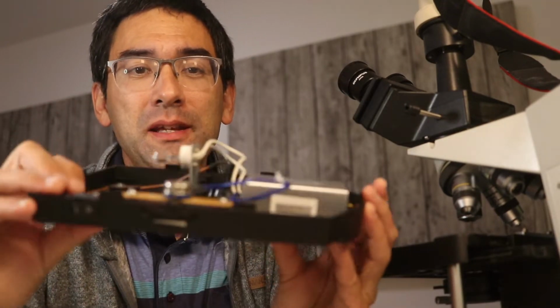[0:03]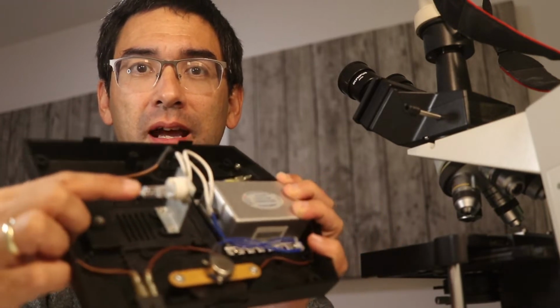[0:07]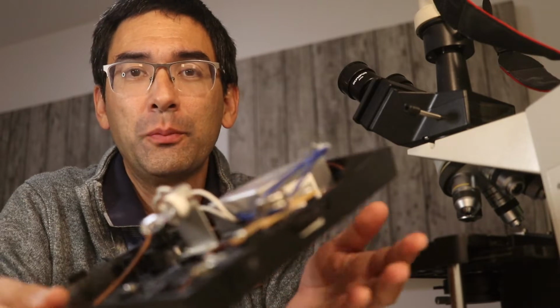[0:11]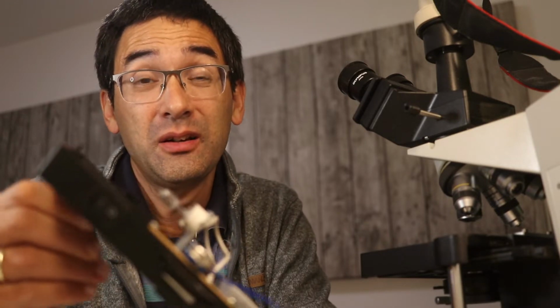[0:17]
This here is the base of a microscope. It contains all of the electronics, and you can also see the halogen lamp here. I detached it from the microscope because it didn't work anymore. We've got a whole bunch of microscopes in school, and we originally thought that the transformers were all broken. It didn't turn out to be like that. In this case at least, it was just the lamp which didn't work.
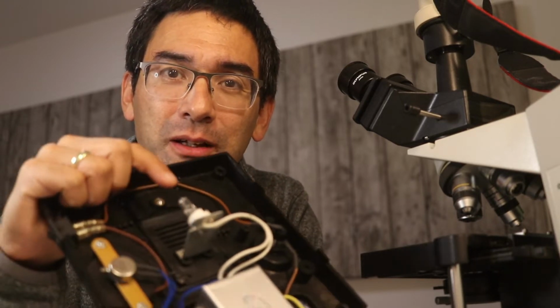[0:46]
But it took me a little bit of time to actually figure this out, and I'm going to show you what I've done, because I originally intended to take out all of the electronics and convert everything to LEDs. That is not necessary anymore, but I'm still going to show you how it's possible to connect an LED lamp here instead of a halogen bulb.
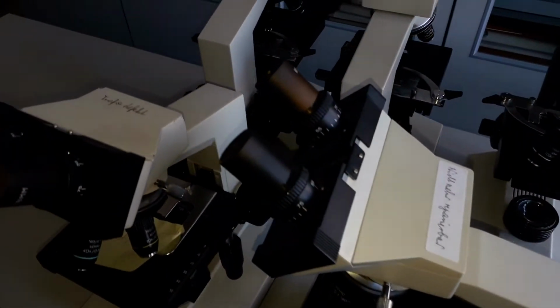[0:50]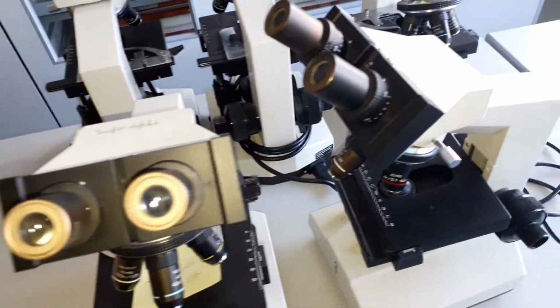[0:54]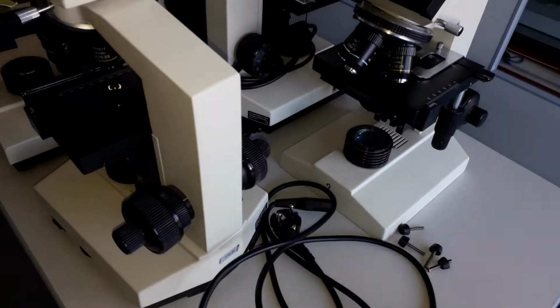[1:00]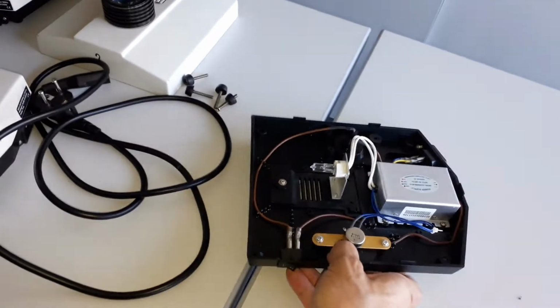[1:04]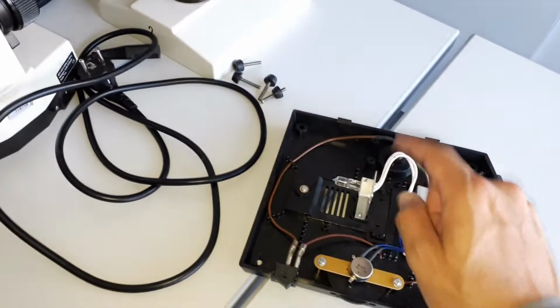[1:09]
So these are the microscopes that need repair, and all of them do not work anymore, in the sense that the electronics doesn't work, so there is no light. I decided to take one of them apart. I unmounted the base, which you have already seen, and this is the part that I took home for further analysis. And at home, I had a close look.
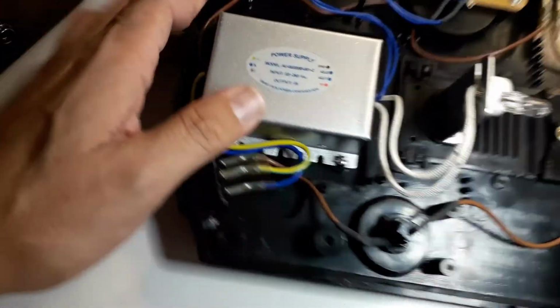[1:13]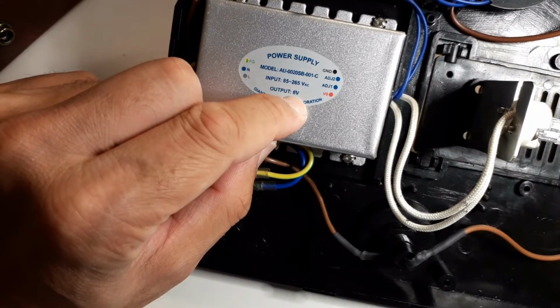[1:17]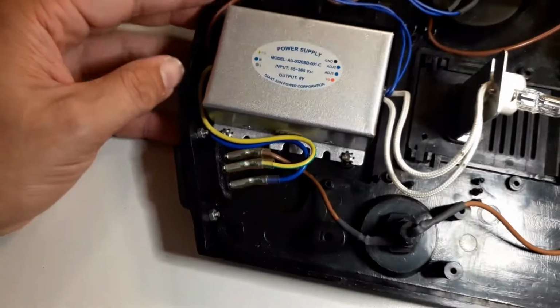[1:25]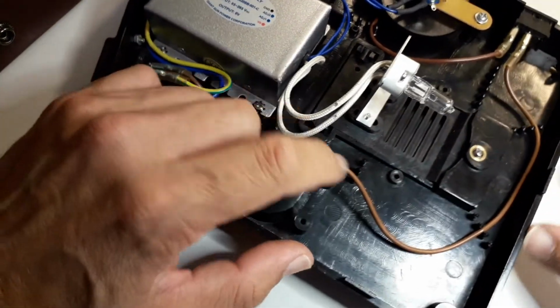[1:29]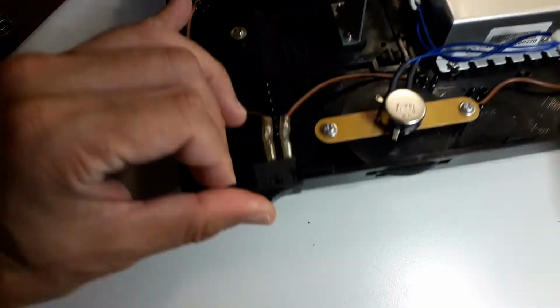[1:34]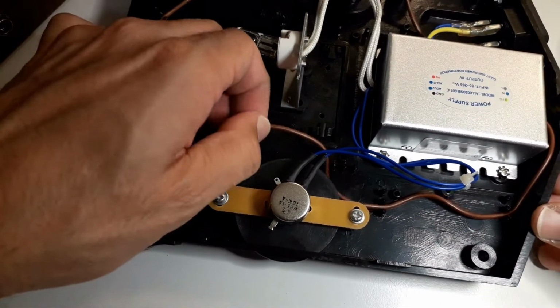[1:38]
The silver box that you see here is the transformer, and it produces 6 volts out of the power supply. These 6 volts are then used to power the halogen lamp. But what are the different parts? First of all, this is the power supply cable, which goes to a switch. And then here is the main switch, of course. Then the power goes into the transformer.
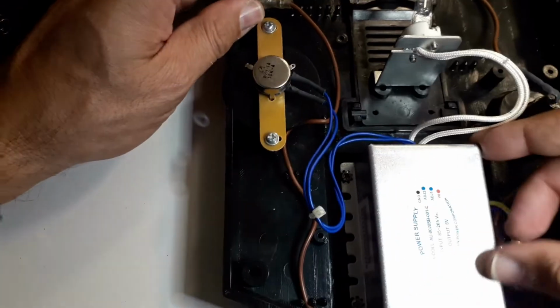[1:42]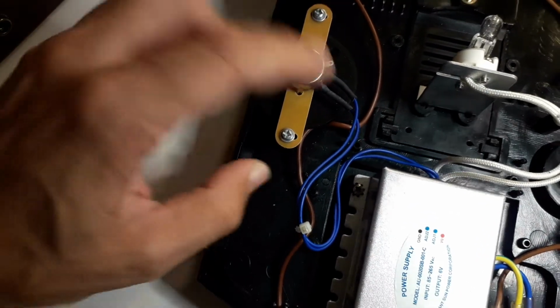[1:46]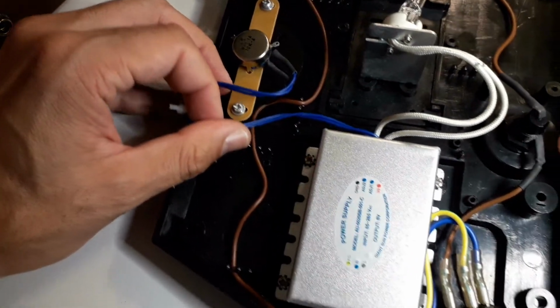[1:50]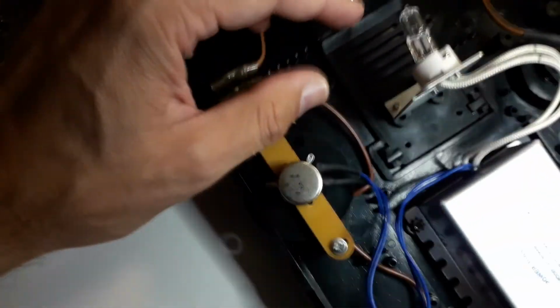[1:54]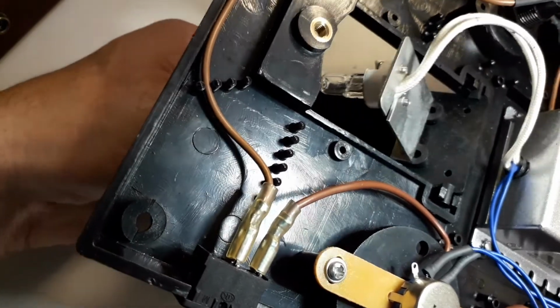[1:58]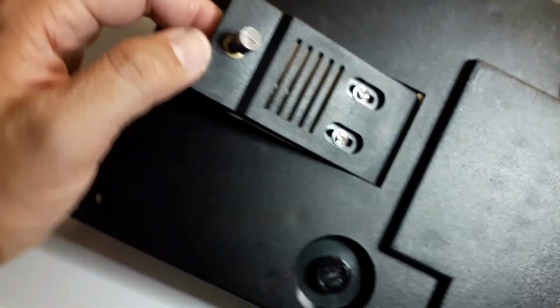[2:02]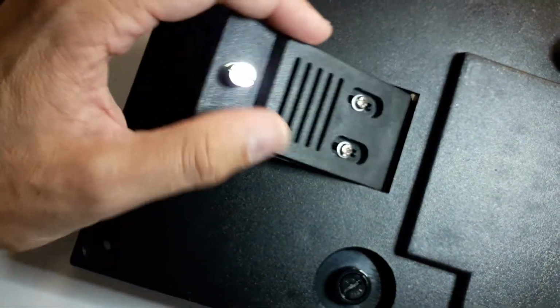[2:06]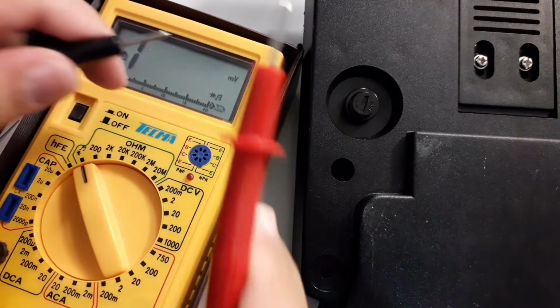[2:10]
The blue cables that you see here on the left side are connected to a variable resistor, and they control the power supply to change the voltage of the power out, which is connected to the halogen lamp. And this is how you're supposed to exchange the light bulb. You do not have to open everything completely, but there's a little door on the bottom of the microscope that can be opened to directly access the halogen lamp.
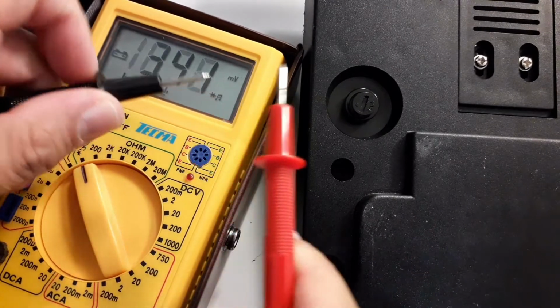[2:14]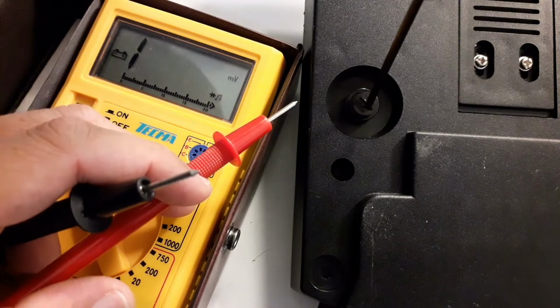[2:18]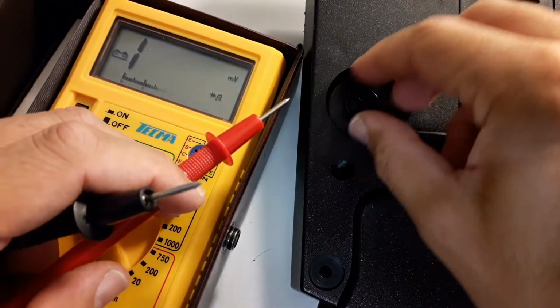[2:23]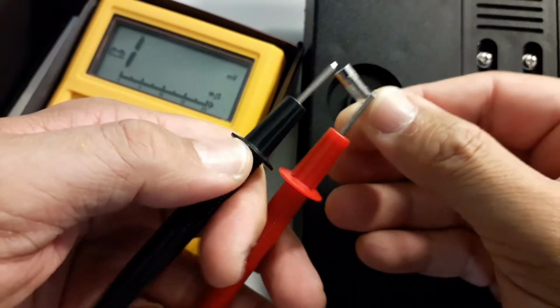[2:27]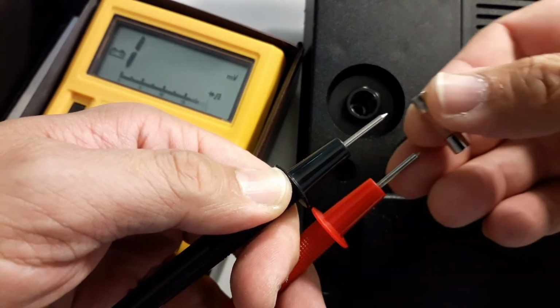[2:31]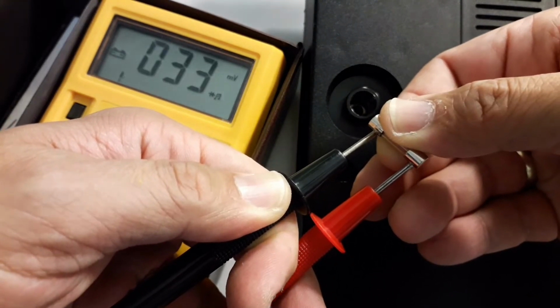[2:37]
Okay, so I'm now checking whether the fuse is still intact, so I'm removing the fuse here, because sometimes things don't work because the fuse is broken. If you hear the beeping sound, this means that there is a good connection, and of course there is a beeping sound, so the fuse is actually not broken, and the fuse is therefore not the reason why the microscope didn't work.
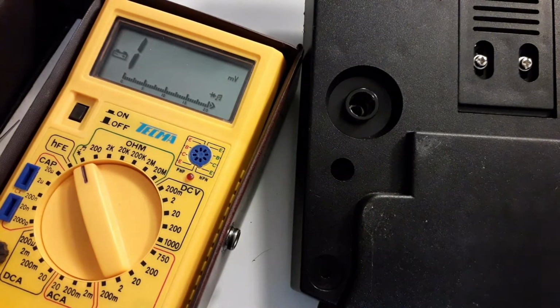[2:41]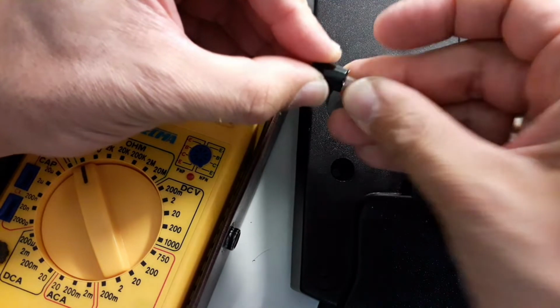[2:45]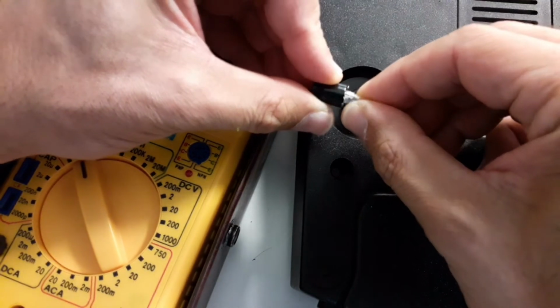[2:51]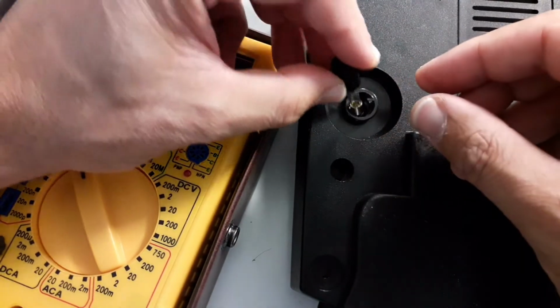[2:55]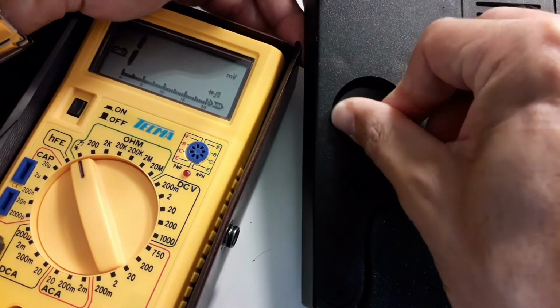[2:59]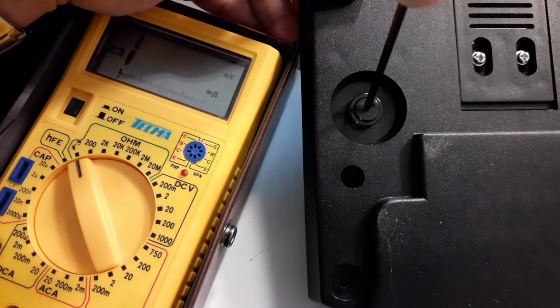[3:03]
And when inserting the fuse again, you have to make sure that you do not insert it too deeply. That is way too deep, don't do that, otherwise there is no proper connection. So only insert it a little bit, put it back, and then this way you can make sure that there is a good connection here. So that means that the fuse is not at fault.
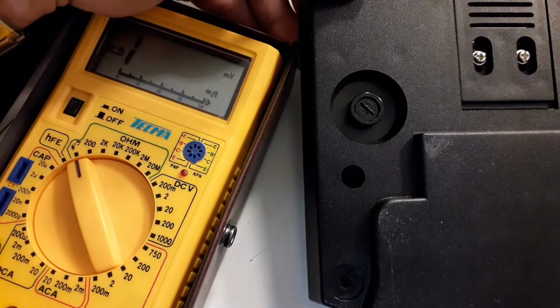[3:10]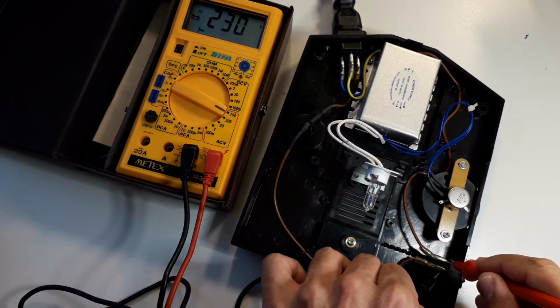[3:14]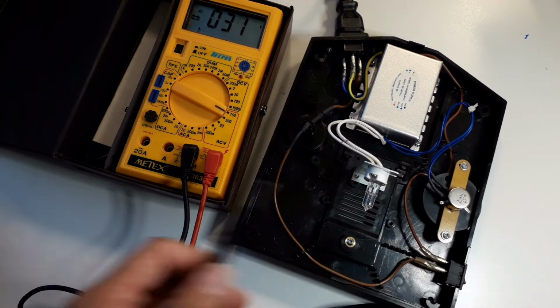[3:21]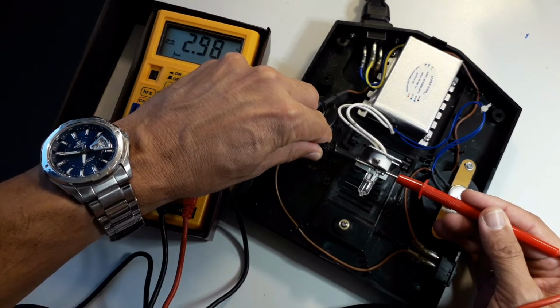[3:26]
We can try to continue to look for the problem. I've already told you that it's actually the lamp that is broken, but the lamp itself looked quite okay. So I'm simply checking whether there is main power, 230 volts alternating current. That is not a problem. You don't want to do that normally, because otherwise you can electrocute yourself. And the transformer produces, at this setting, at least 3 volts. If you turn it up a little bit, then of course you get the 6 volts. But the power is actually reaching the lamp, and this should have already been a first indicator that the lamp has a problem.
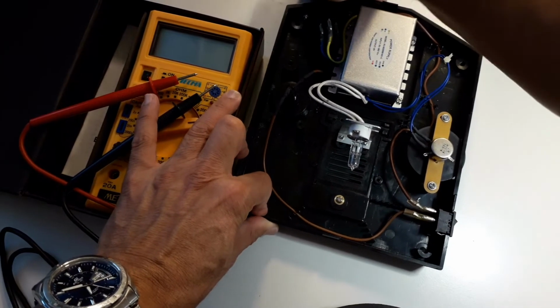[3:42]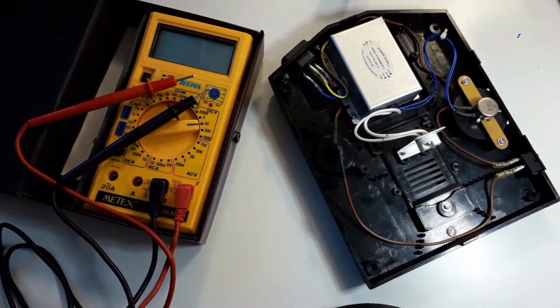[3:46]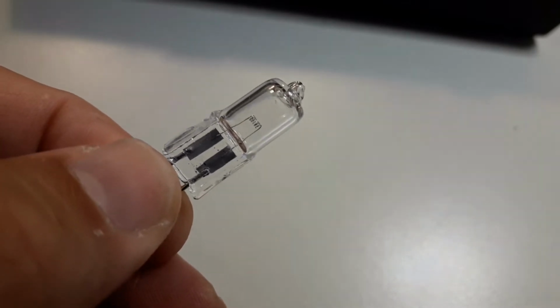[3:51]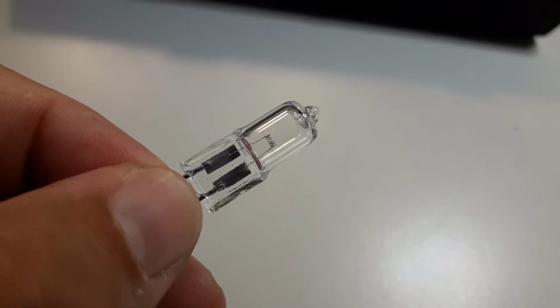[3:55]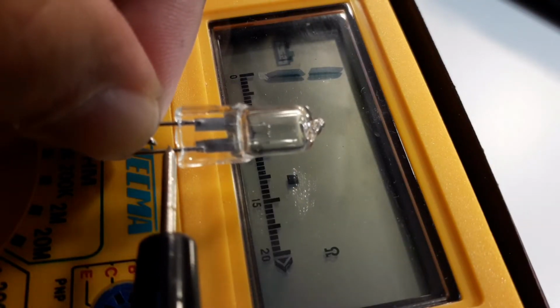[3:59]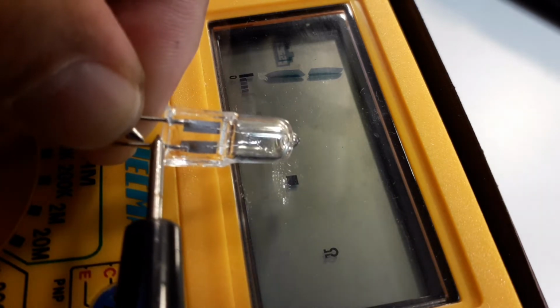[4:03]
What I've done next is I've simply taken the lamp out, and it looked okay. There is no black deposit anywhere. It did not look broken at all. So evidently there is a problem somewhere. But when I measured it, I was able to see that there is no connection here. So it's indeed broken.
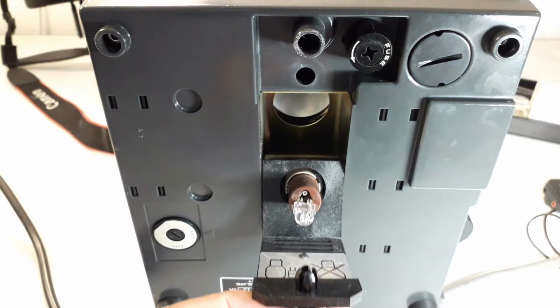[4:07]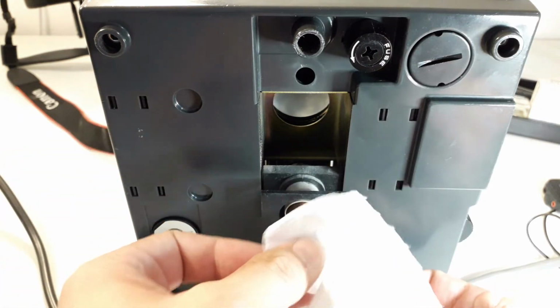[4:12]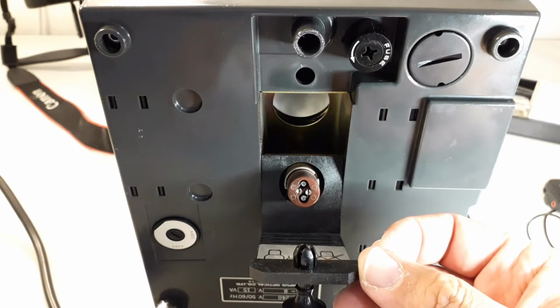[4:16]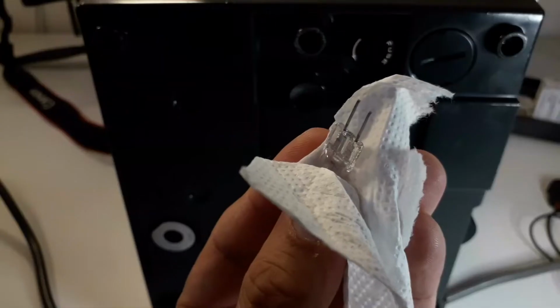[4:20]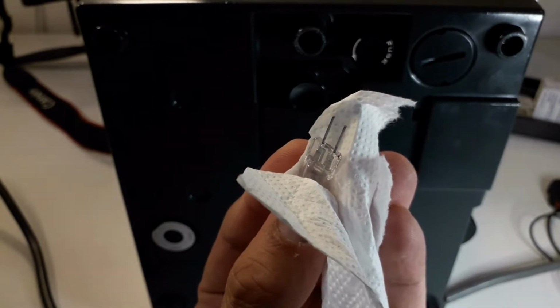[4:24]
So I took out the lamp from another microscope. I'm always using tissue paper, because you do not want to get any fat from your fingers on the lamp, because this can really break the lamp. I've taken an intact lamp, I've inserted it into the microscope, here I'm inserting the lamp right now.
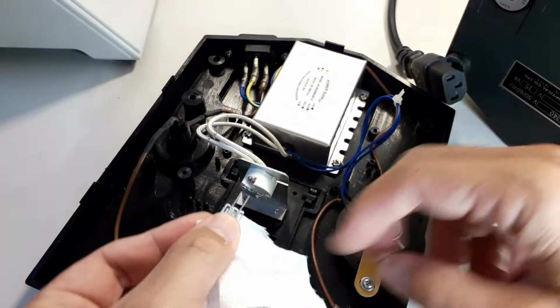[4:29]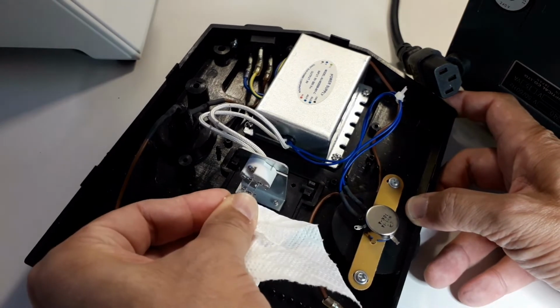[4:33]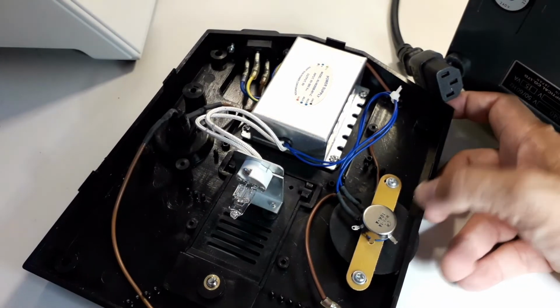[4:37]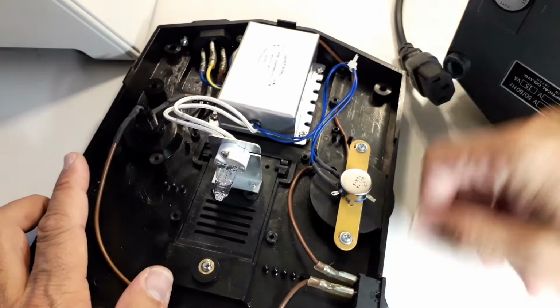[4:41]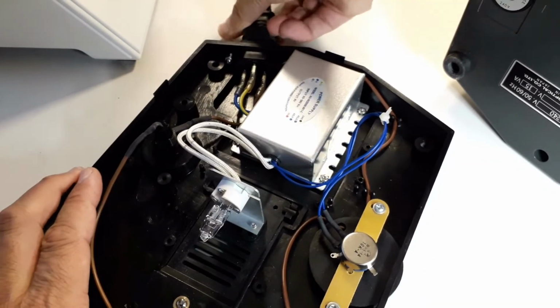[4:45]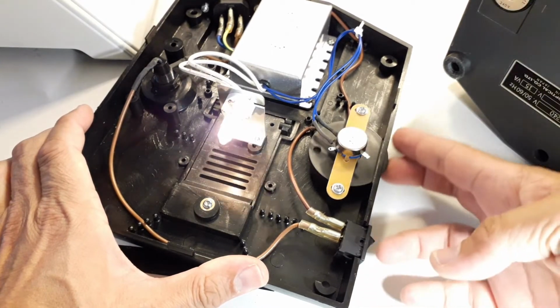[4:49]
Of course, be careful that you do not get any fingerprints on the lamp, because this can actually really destroy the lamp. So, and then let's see if this works, okay? And I switched it on, forgot to connect the power supply here. I still have to do this. Okay, so I'm going to switch it on. And yes, it does work.
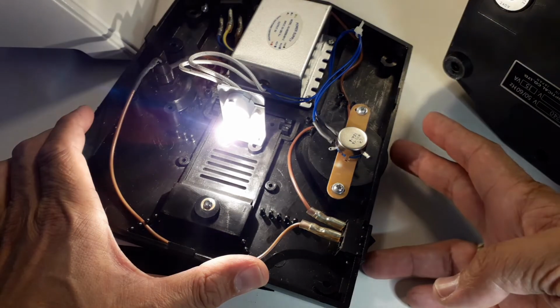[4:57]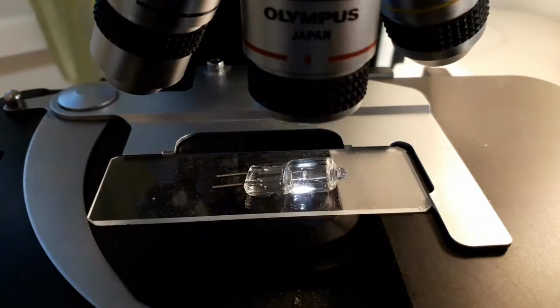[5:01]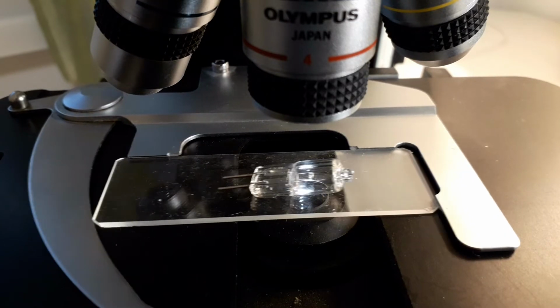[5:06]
That's actually quite a straightforward issue here, what we have. And now I wanted to actually figure out really where the lamp was broken. The other lamps I put directly under my microscope. And I tried to look at the filament and look at this. Yes, here it is here. That is the break. Okay, it was very difficult to see.
But here under the microscope, it's quite easily visible. It's the lamp which was at fault. Yeah, so okay, so that's basically the proof. The lamp is broken. A little bit disappointed I was, I have to say, because I was actually hoping that this would give me now a good opportunity to take out all of the electronics and to change it over to LEDs. I'm not going to do this now. I'm simply going to exchange the light bulb.
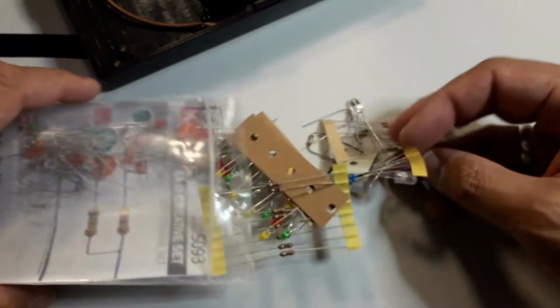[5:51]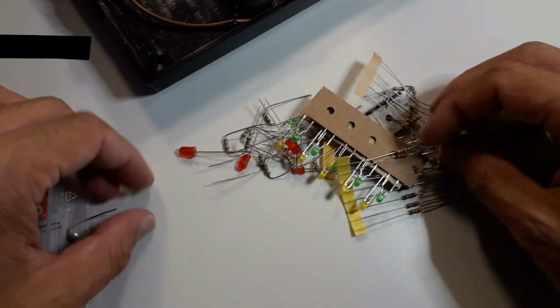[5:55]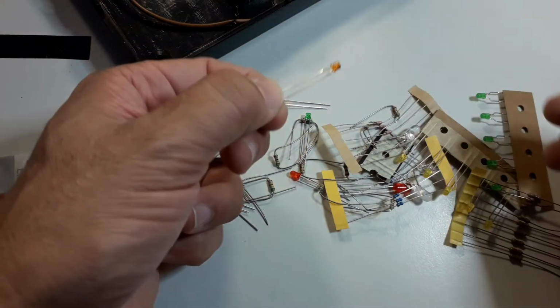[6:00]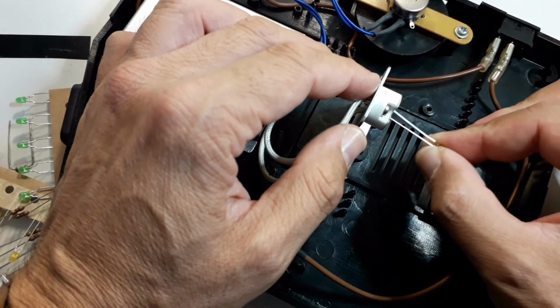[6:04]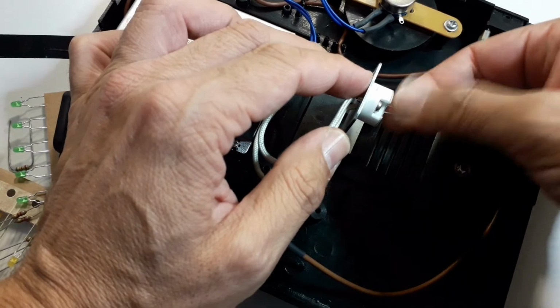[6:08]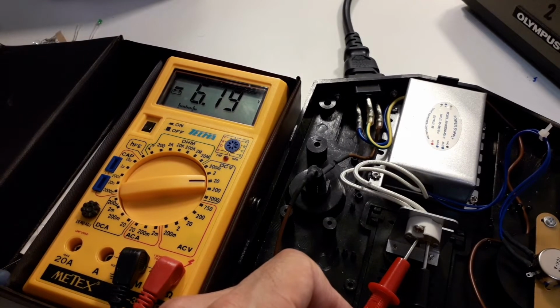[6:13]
But one of the things is I still wanted to show you how it is possible to connect an LED. Yeah, so here is a little collection of LEDs and resistors, and I bought this very cheaply at an electronics shop. I'm simply going to put one of those LEDs in there, and I'm going to break it because I am not connecting a resistor to it. So I'm directly connecting it. Bent it up a little bit and I switched it on, and I discovered that it did not work.
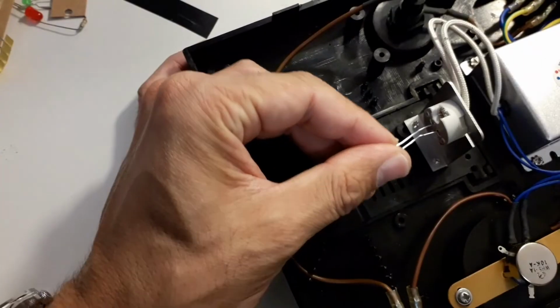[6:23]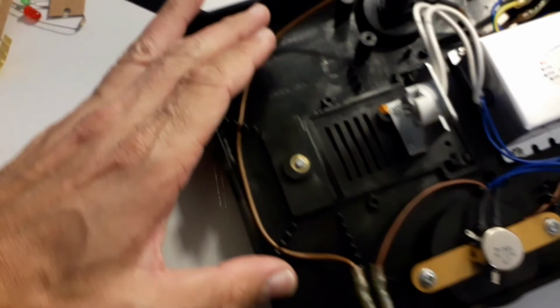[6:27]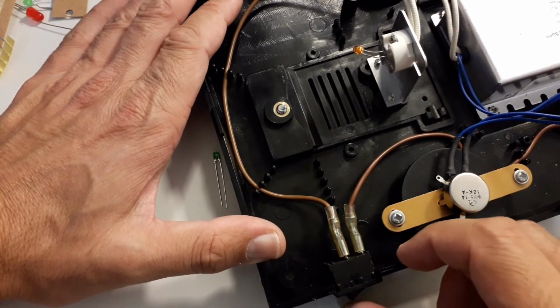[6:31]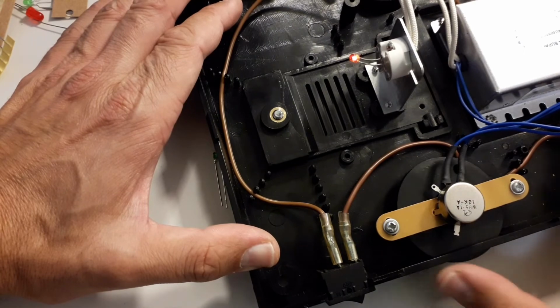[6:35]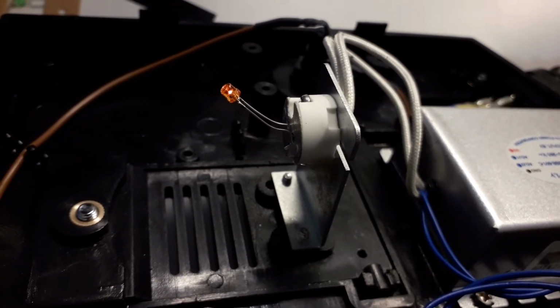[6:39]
And then I checked and I discovered that the transformer supplies a direct current. And I measured it out, so you see plus 6 volts, and then I had to turn around the polarity of the LED, and then it did work. You can see that you switch it on now, and you turn it up, and yeah, it does work. It did not provide a very stable light. It was flickering around a little bit, as you can see right now.
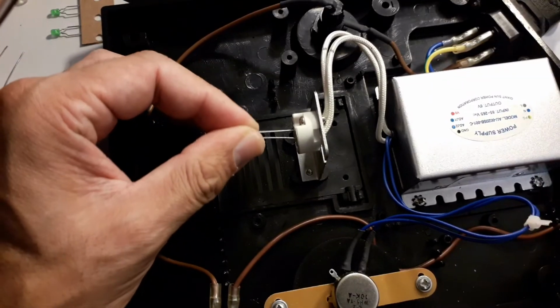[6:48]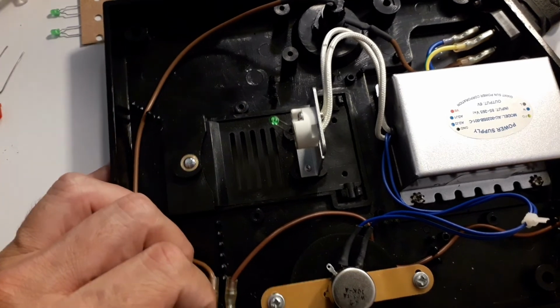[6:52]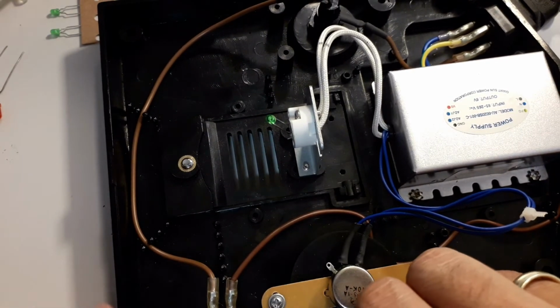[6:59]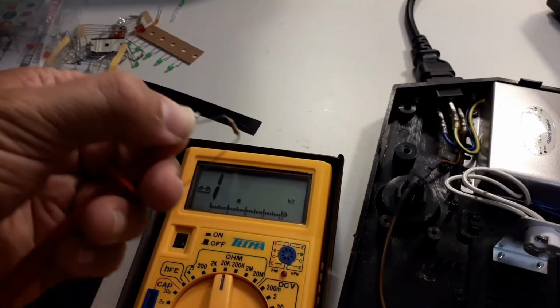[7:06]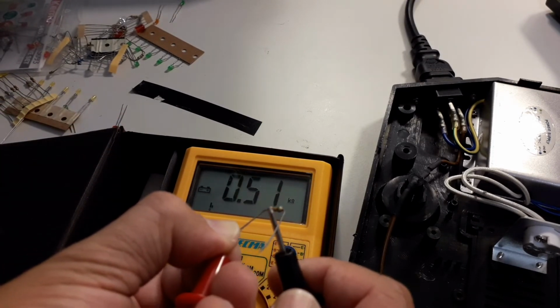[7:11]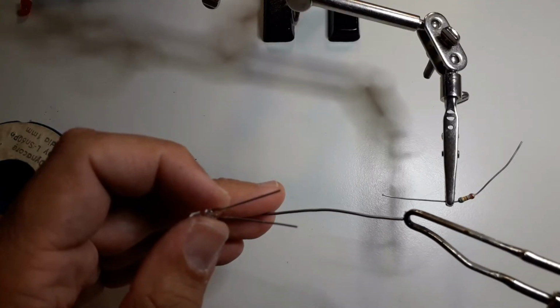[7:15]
And the reason is you should never ever connect the LED directly to a power source, because the current is so high that it will break the LED. So I changed the LED around, and this green LED worked for a few seconds, and then it also didn't work anymore. Yeah, so as expected, I broke it, and it actually got quite hot and it started to smell pretty badly.
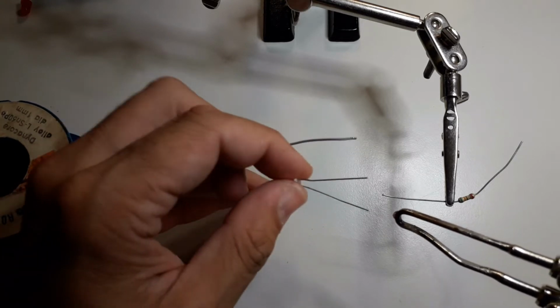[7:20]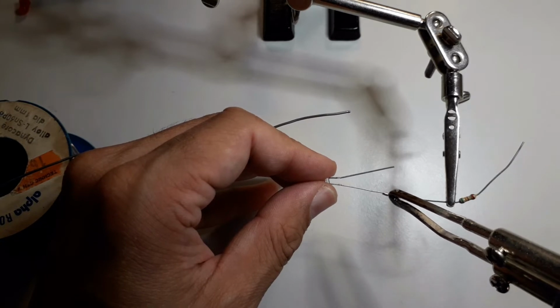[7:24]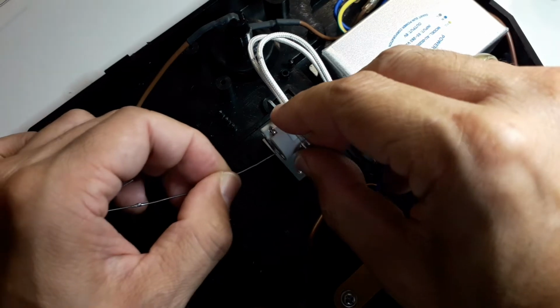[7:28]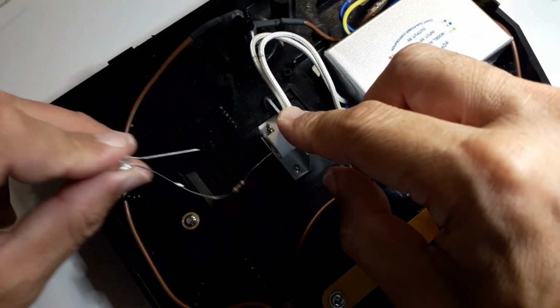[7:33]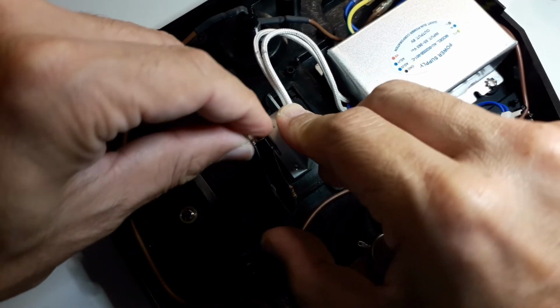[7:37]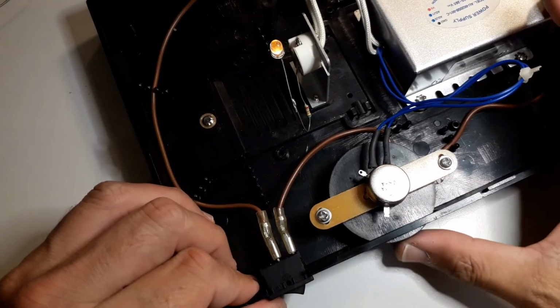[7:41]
So I took approximately a 0.5 kilo-ohm resistor, which happened to be also in my collection there, and I soldered the resistor to one of the connectors of another LED, one that was still intact, because the resistor is important to limit the current. Yeah, and then basically I connected the LED and resistor combination into the socket, and then I again switched on the light, and you can see it works.
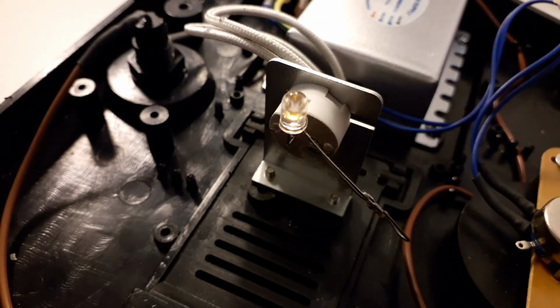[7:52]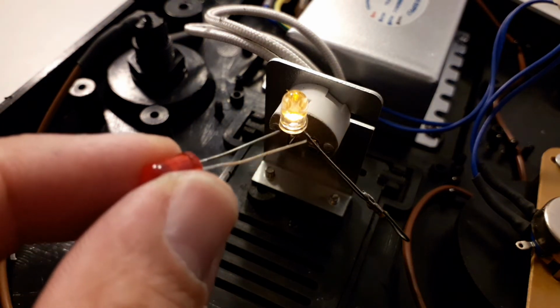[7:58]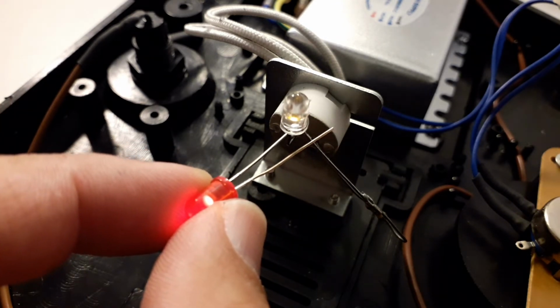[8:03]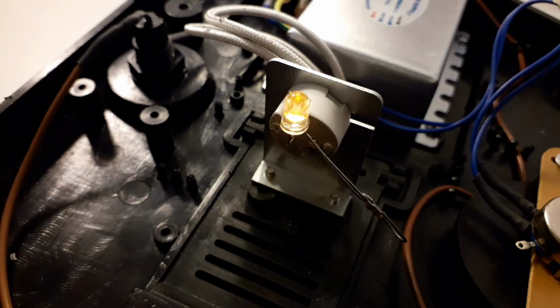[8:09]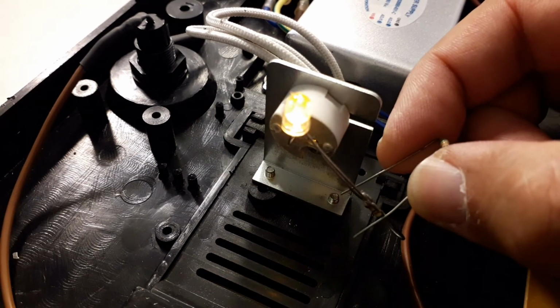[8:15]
Yeah, and you can actually also control the brightness a little bit. Of course, this was not a very bright LED, the brightness provided here would not have been enough to actually power the microscope. Yeah, if you connect the second LED, then you can see that it also works like this. Was just playing around a little bit. I mean, I have to have some film clips to actually make a YouTube video. Yeah, and if you connect another resistor in parallel, you can see that this increases the current and also the brightness a little bit.
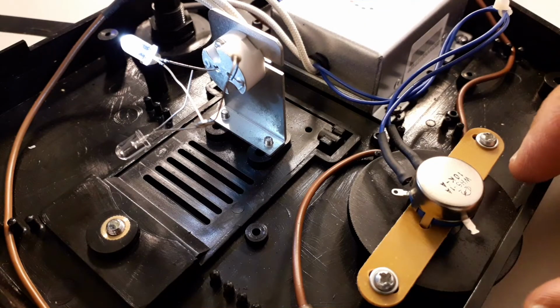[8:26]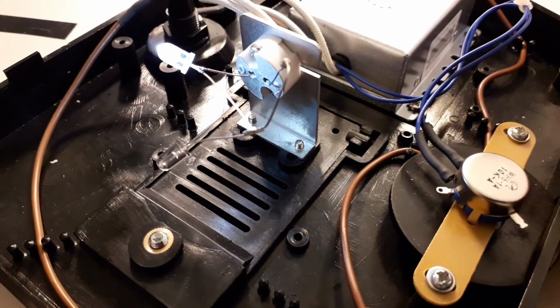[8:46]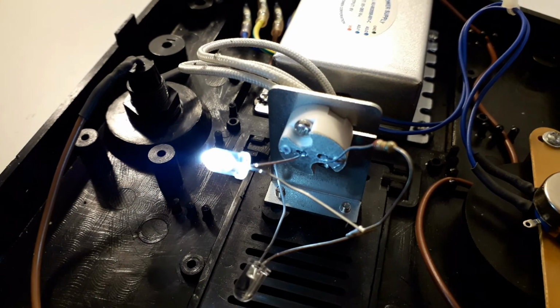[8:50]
But still, it's not bright enough to be useful for microscopy, I think. So I might actually go out and buy a new halogen bulb. I did find a bright light bulb, but as you can see, the response is very non-linear. As soon as you turn it down a little bit, it starts to go off immediately. You turn it up a little bit, then it goes to the maximum brightness. Yeah, so the non-linear response of LEDs can also be somewhat of a disadvantage. And even this bright white LED is actually not bright enough for microscopy. It's a pity. Maybe I have to connect several of them.